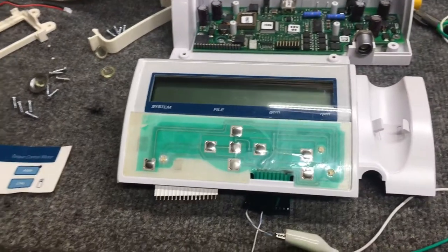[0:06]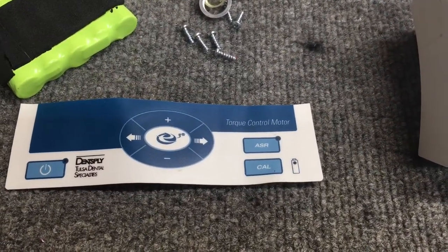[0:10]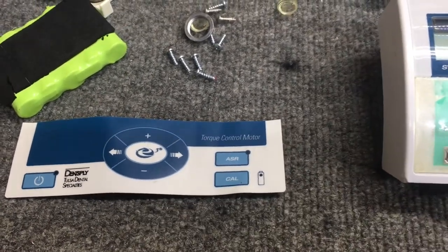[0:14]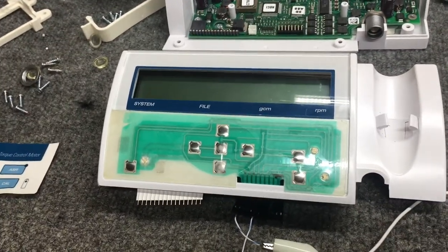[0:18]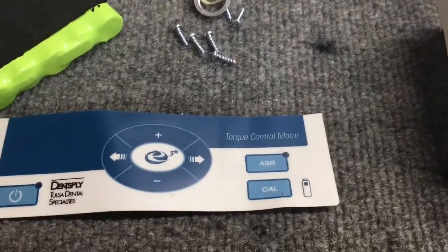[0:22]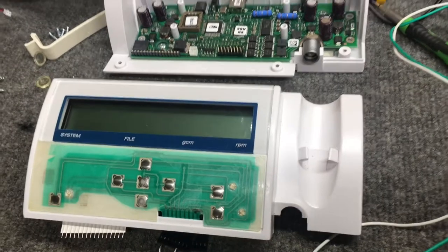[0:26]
Have an interesting one here today. This is Dentsply, could be pronouncing that wrong, by Tulsa Dental Specialties, E3 torque control motor. So I guess this is the motor controller for whatever dental tool this is used for. I'm not a dentist, so I don't know.
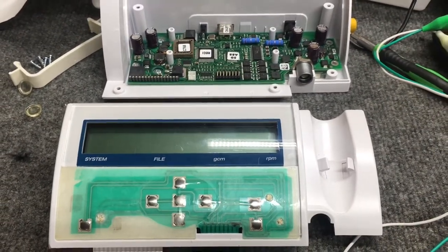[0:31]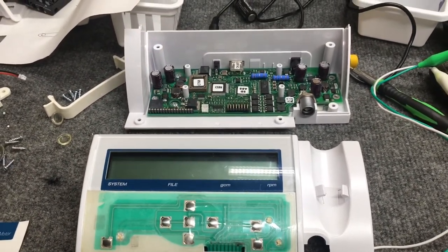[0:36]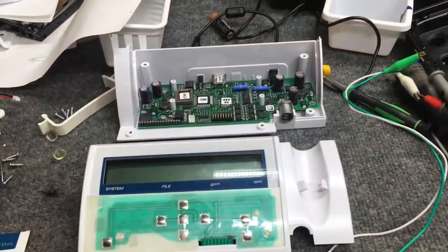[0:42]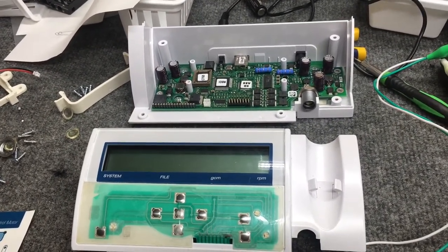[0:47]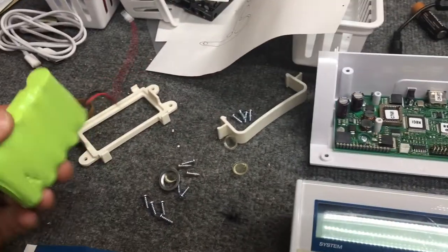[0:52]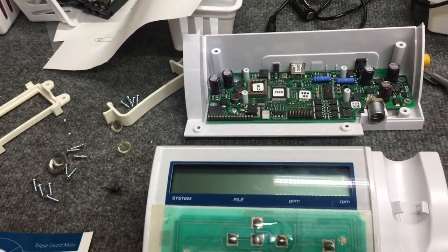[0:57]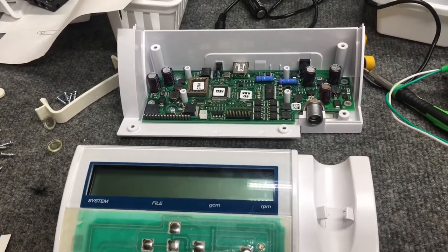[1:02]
It did come in the shop today for a battery issue, I guess. It has an internal battery. The customer requested we replace the battery because they said it's not holding a charge anymore. We plugged this in before we disassembled it, noticed it was charging, so we took it apart and checked the battery itself. The battery seems fine. It's a 6 volt, 2000 milliamp hour battery. From the research I performed, it looks like it's the correct battery for the unit.
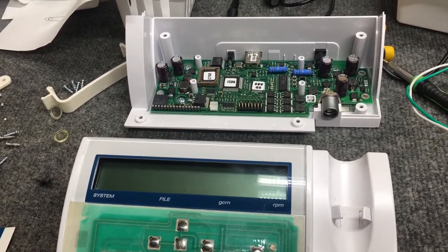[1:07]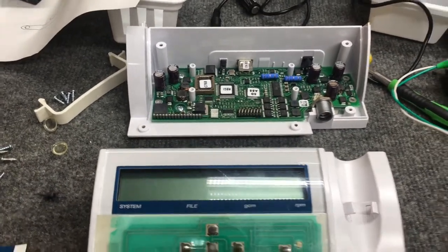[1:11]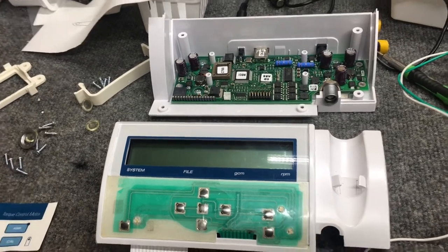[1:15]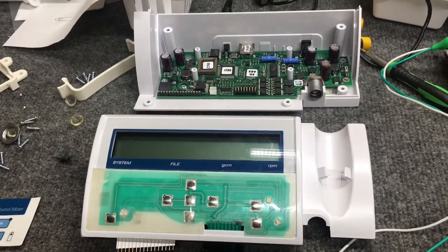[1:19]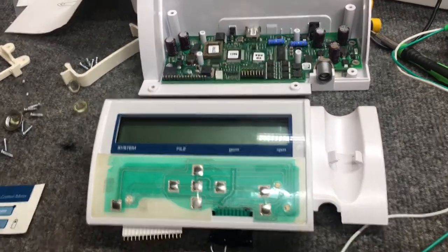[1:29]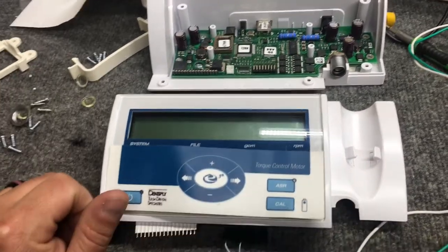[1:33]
So we plugged it back in. It automatically powers on as soon as you plug it in. We unplugged it and the unit stayed on. So obviously the battery was working properly. So we unplugged the battery to kill the unit again, then plugged the battery back in, and the unit does not power on by itself. We tried pressing the power button, nothing.
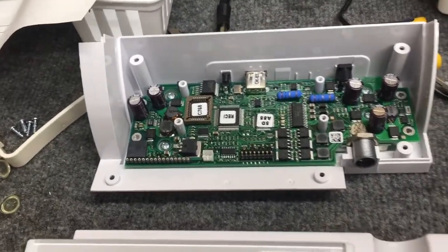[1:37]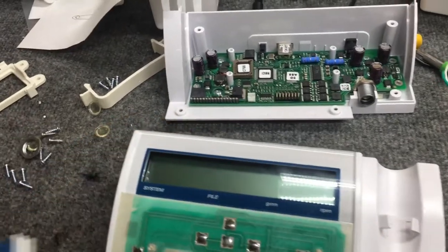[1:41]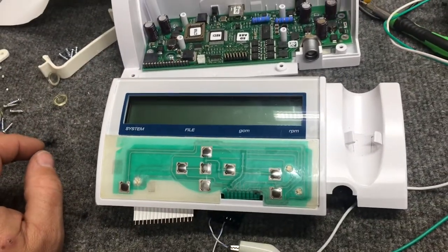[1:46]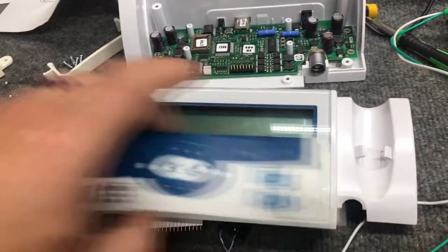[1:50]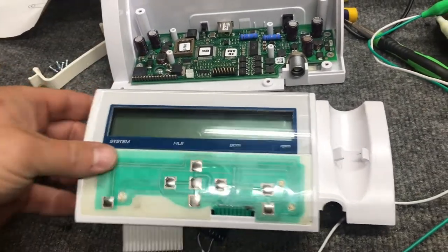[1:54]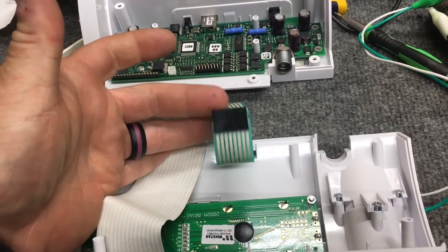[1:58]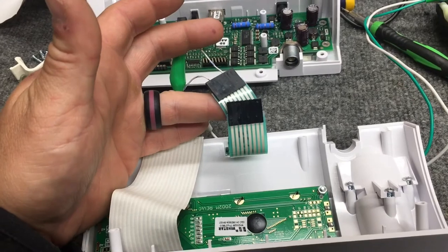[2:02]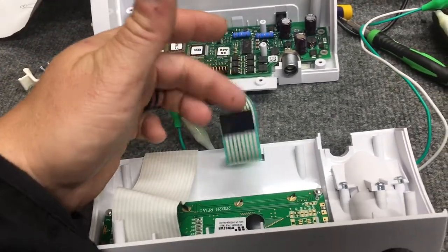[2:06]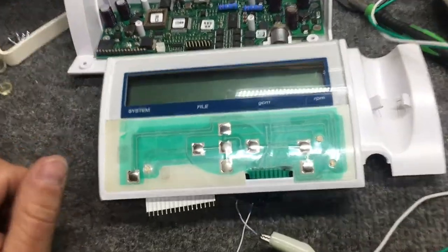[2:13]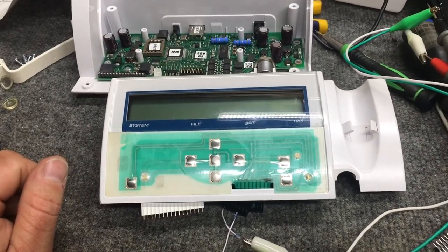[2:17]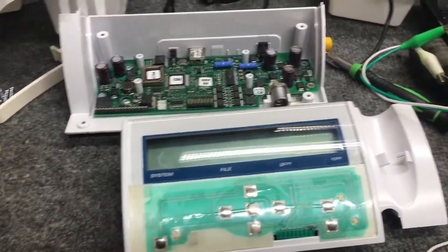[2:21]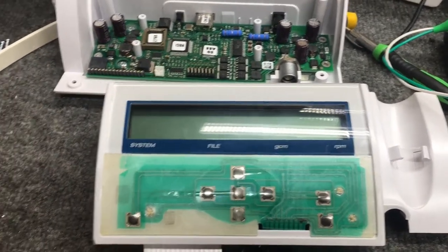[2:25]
So we did a little troubleshooting. We're getting all of the correct voltages on the board itself. So the next thing, we decided to troubleshoot the keypad section. Before we took this decal off, we were trying to figure out which switches controlled which pins on the board. These cables physically connect to either the switches or the LEDs, the indicators. It was getting tricky to figure out. We mapped out a few buttons and figured, let's just pop the decal off. We could always glue it back on after.
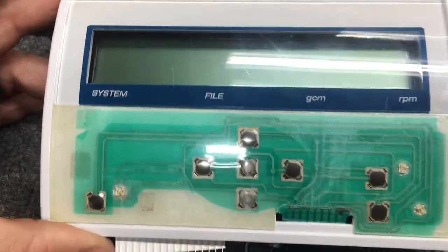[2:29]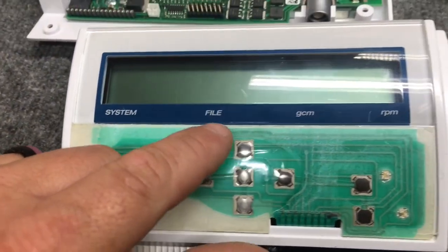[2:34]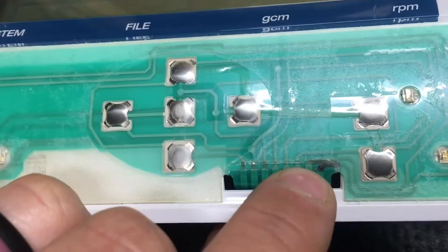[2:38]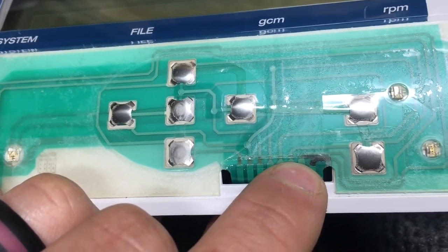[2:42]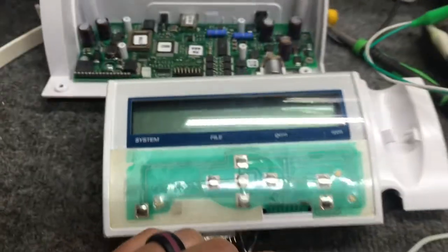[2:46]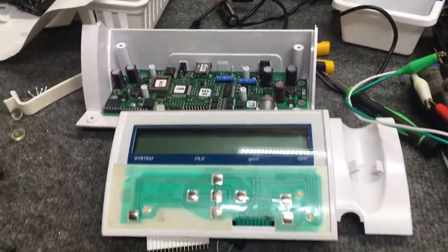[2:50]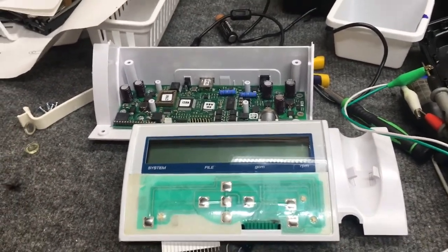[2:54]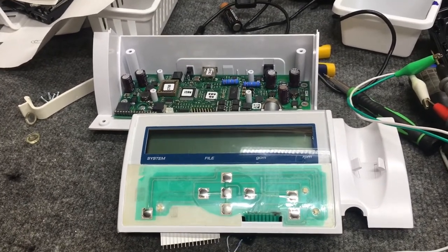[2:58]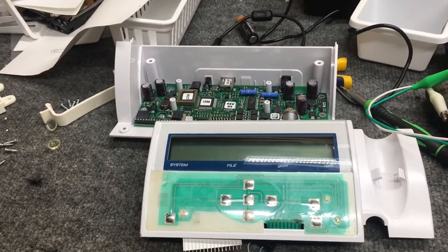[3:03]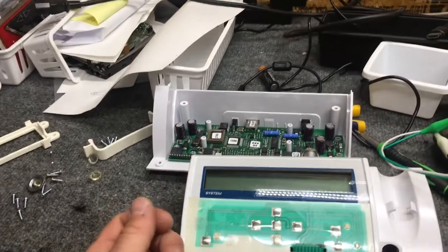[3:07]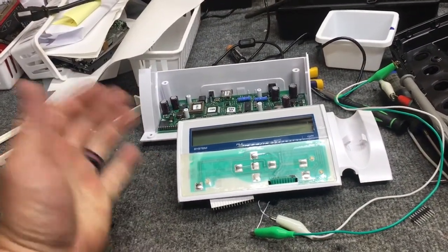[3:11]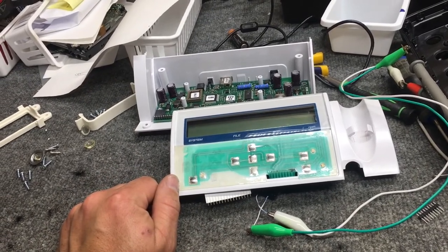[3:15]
What I figured was the case is the power button itself is right here. If we follow back the trace of the power button, right there is our issue. It looks like it's burnt or corroded right on that power trace. So what the customer thought was a battery issue was in fact a power button issue. He assumed it was the battery because when you plug the unit into the wall adapter, it automatically powers on. It doesn't do that when you just have the battery connected. That auto turn on only happens when you plug in the unit. So it makes sense, but in fact it's the power switch.
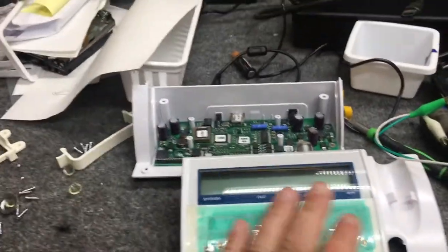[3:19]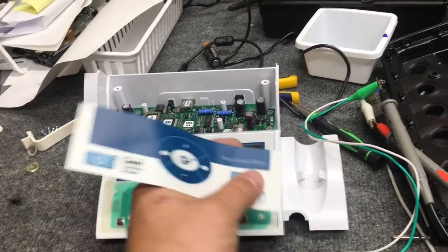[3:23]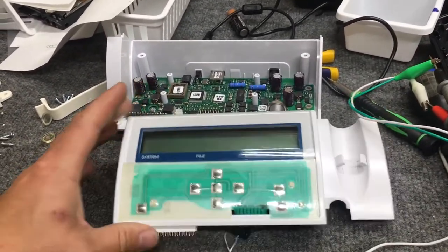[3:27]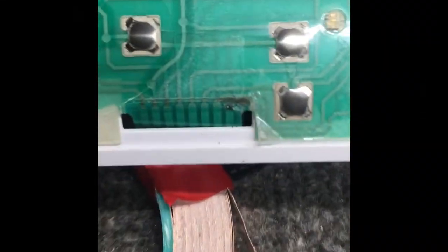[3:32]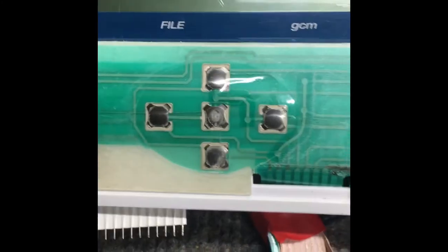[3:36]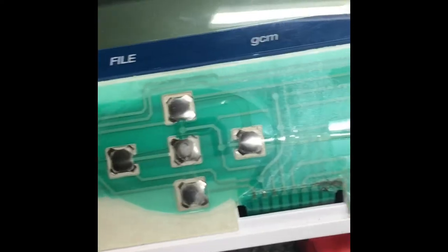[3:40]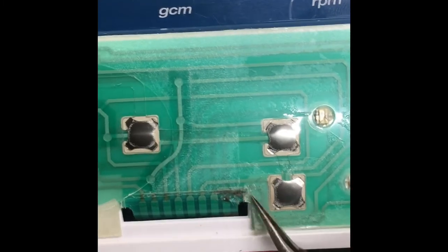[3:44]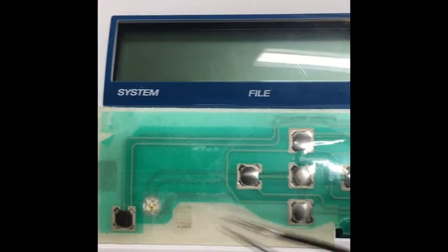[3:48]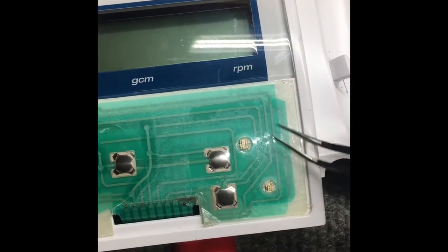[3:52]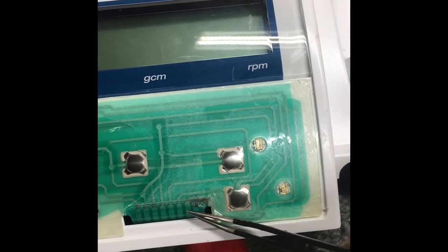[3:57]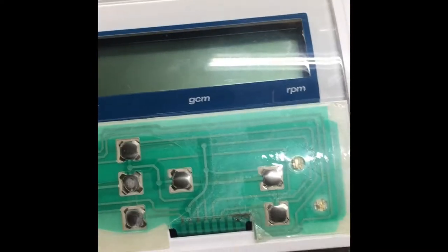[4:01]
We're going to repair this trace for the customer, clean this up a little bit, and glue this decal back on just like the way it came. And we're going to give it a good test. Because of the damage on this membrane, the power switch, we visually traced out where it's connecting. This is the power switch. The two lines up here come down, go around the LED, come over here, and connect to these first two contacts, first two pins.
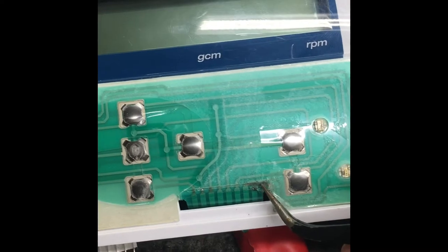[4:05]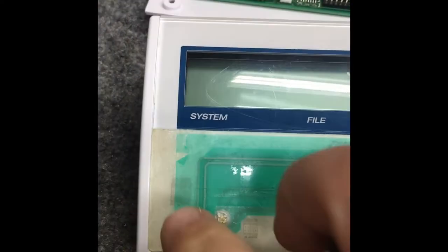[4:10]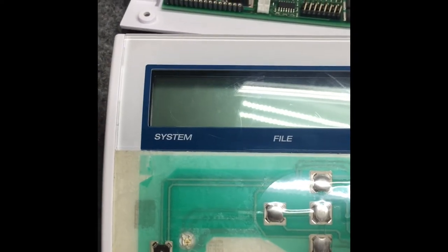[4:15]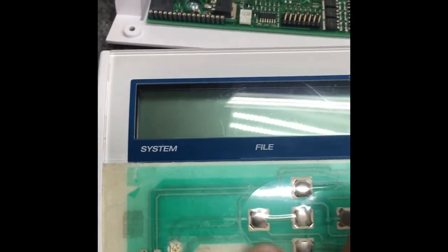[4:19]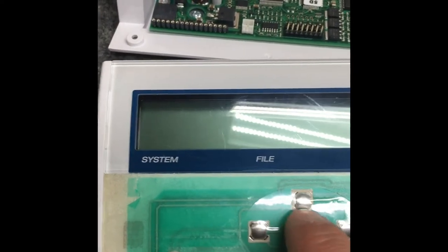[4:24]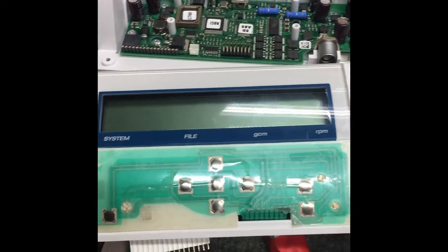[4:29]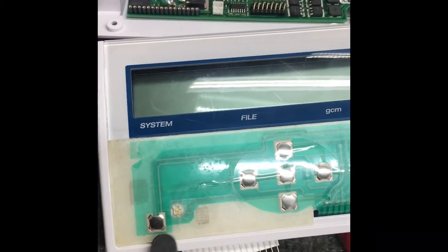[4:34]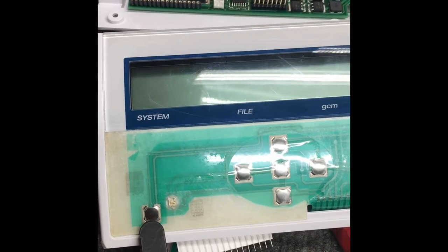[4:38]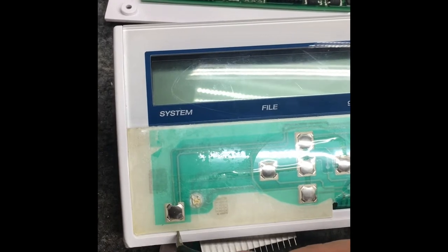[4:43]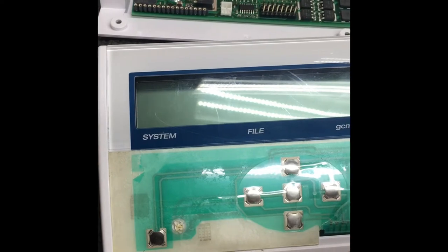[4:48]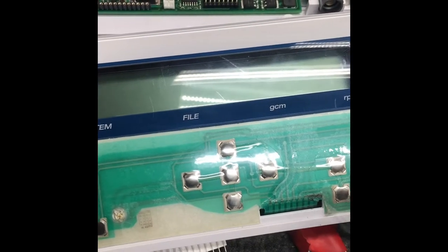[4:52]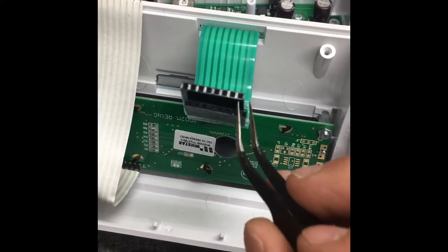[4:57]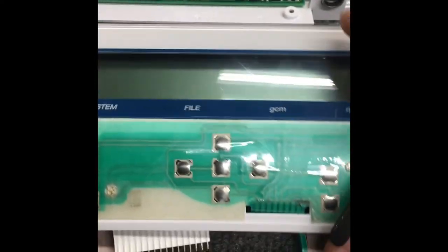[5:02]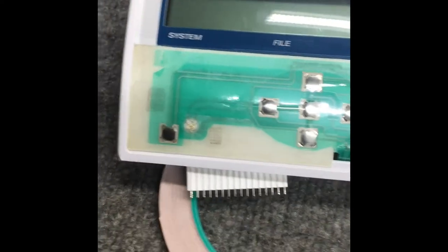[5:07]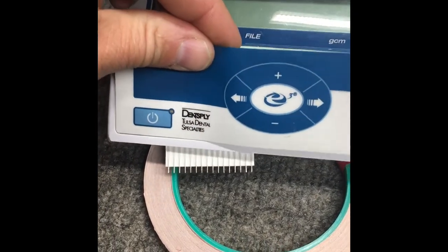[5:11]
Because of the damage, we're going to remove this little switch assembly itself and replace it with an actual microtactile switch. It might be a slightly different height than these, but it shouldn't matter at all. I'm sure the customer just wants this thing back in his inventory. I guess this was a spare for his dental practice. We're going to take some very thin gauge wire, run it down through this little crevice, along here, and connect it directly to these two pins right here. If all works out well, this original decal will cover up those thin wires and we'll be ready to go.
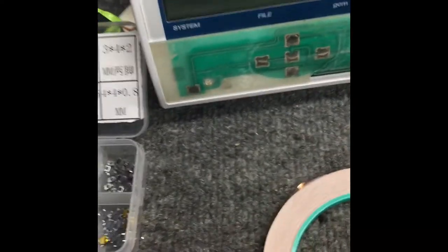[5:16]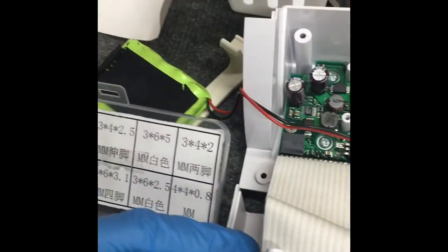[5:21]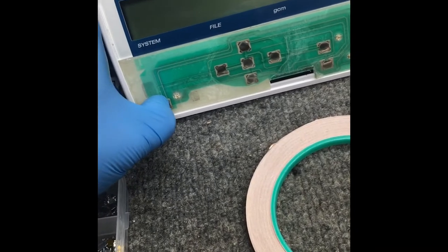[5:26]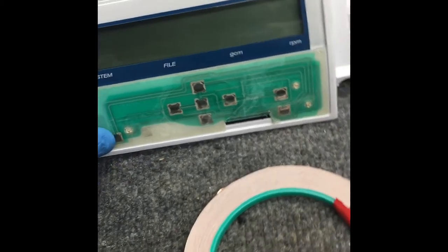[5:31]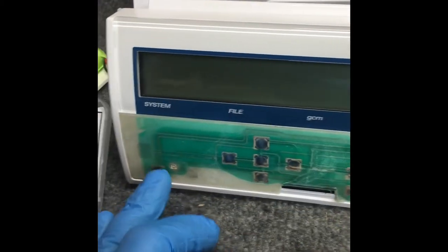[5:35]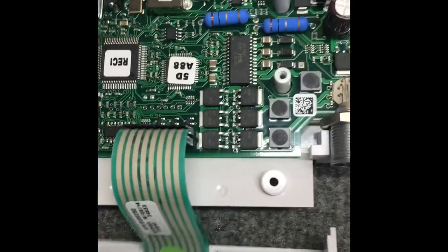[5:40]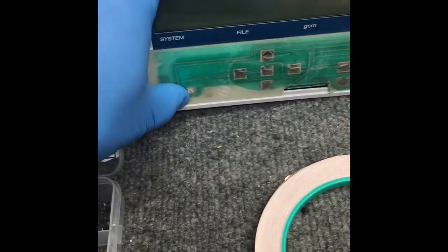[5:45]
I just wanted to show real quick that the power button is indeed not working, so I reconnected the cables and the battery, and we're going to give this power button a test. Pushing, nothing's happening. Pushing, holding, nothing's happening. We confirmed that because we checked continuity, and there's absolutely no connection from the switch once it's depressed to the first two contacts, which are the power button. So just an initial test, definitely not working.
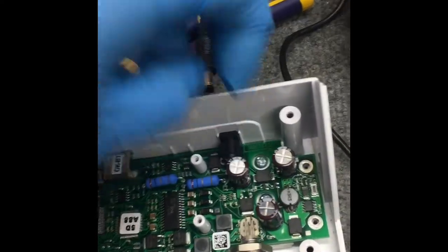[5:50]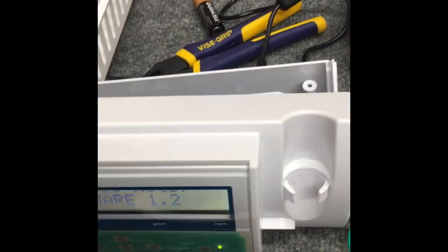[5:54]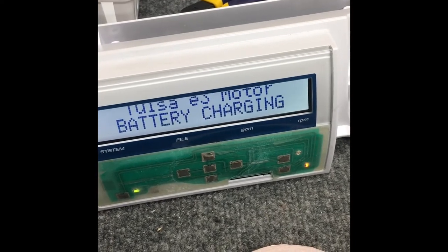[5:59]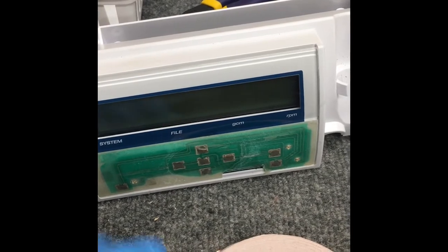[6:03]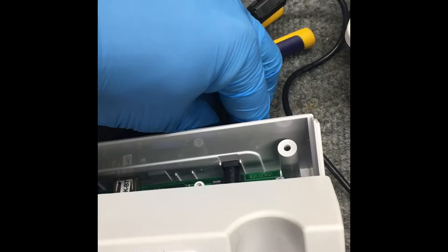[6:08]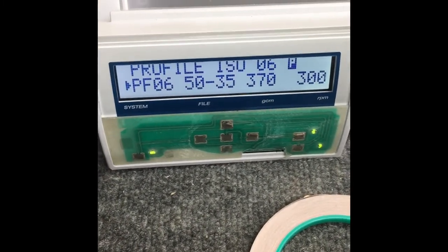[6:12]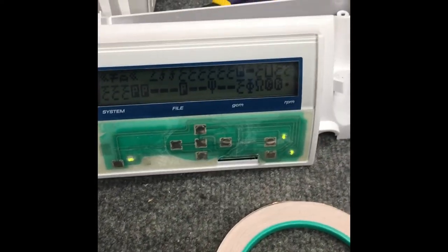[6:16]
But as I mentioned, if we plug in the 12-volt power adapter, it starts up by itself, because it's detecting the charger being plugged in. So we disconnect it and it's still on. So there you go, the battery is in fact functioning properly. But of course, the power switch can't turn it off or on.
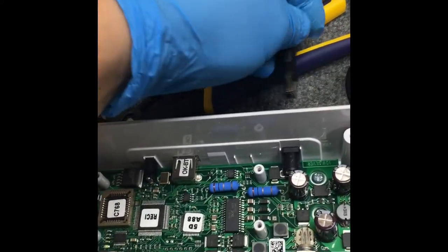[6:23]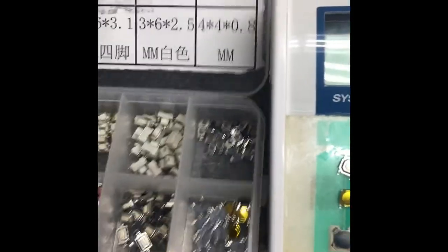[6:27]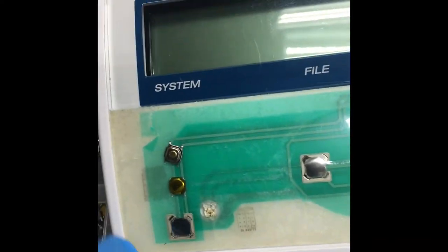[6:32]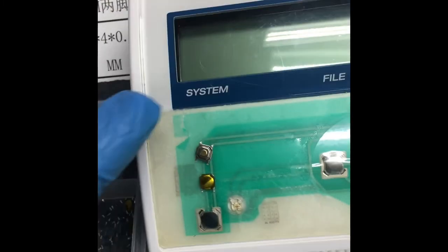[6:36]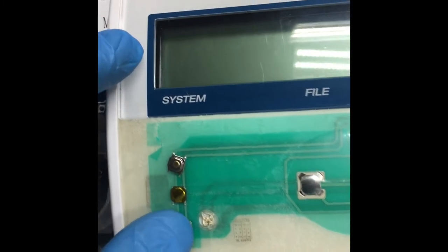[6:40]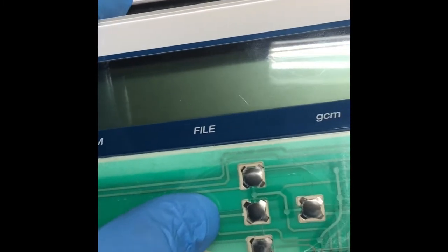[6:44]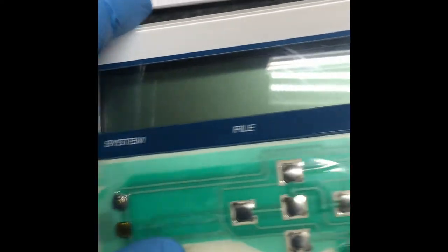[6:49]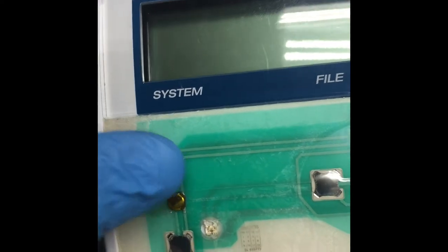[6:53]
We have several styles of micro tact switches here, and we're just lining them up. This is still kind of sticky, so the benefit is we just stuck some of these switches up. I'm trying to get the most comparable tactile feel of these switches. It's obviously not going to be the same, but something similar, something easy to push. So these are the two that we just stuck here temporarily, just to feel.
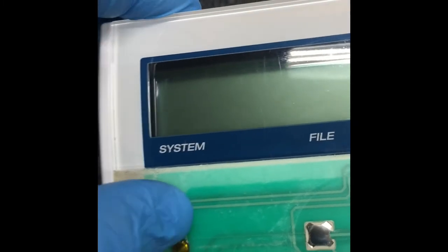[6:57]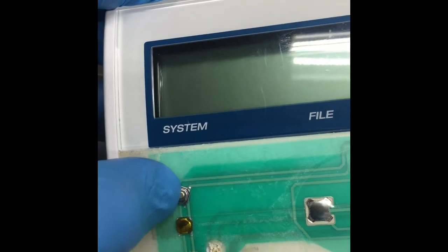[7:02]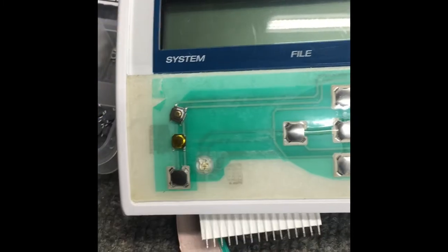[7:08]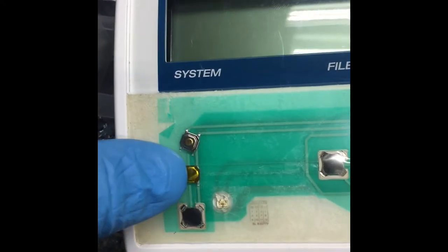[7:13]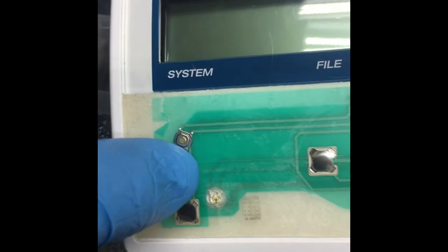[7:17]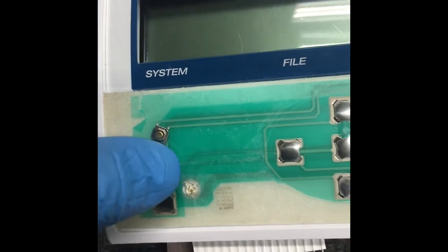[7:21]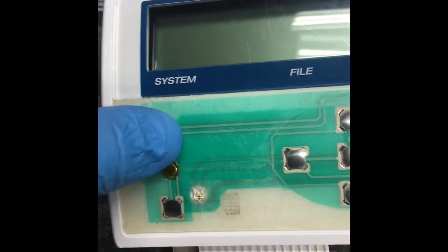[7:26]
Now this switch is very difficult to depress because it's probably meant for another plastic piece or something to go on top of it to push it. Using just a finger, and obviously with the decal on it, this isn't going to work, so we can't use this one. I have this one here. Now this feels much better. It's not exactly like the stock OEM, but it's definitely better than this one here.
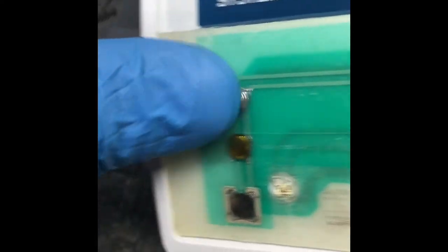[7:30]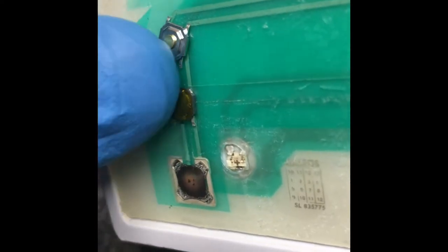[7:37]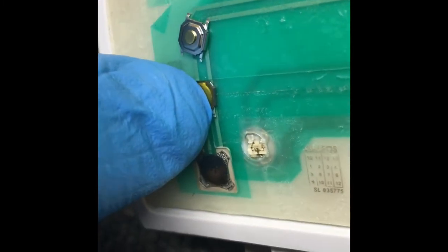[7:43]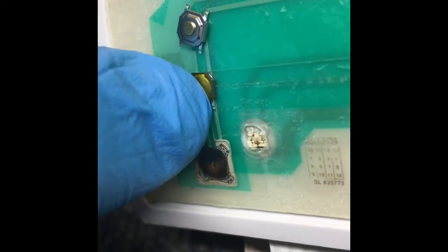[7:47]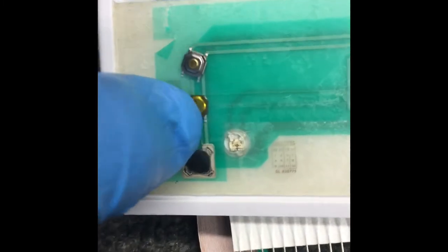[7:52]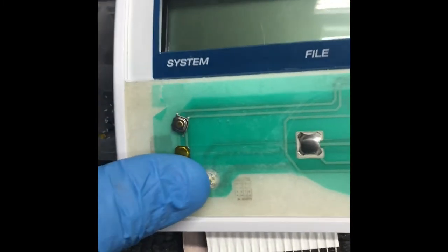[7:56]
And the benefit of this, as opposed to even this one and others in this kit here, is the height. Obviously, it's going to be higher than the stock switch, but really not that much higher. So it's going to bulge out a tad bit, but honestly, when the decal's on it, we're probably not going to notice. So I think when the decal's on that, it's going to work just fine. So that's what we're going to do.
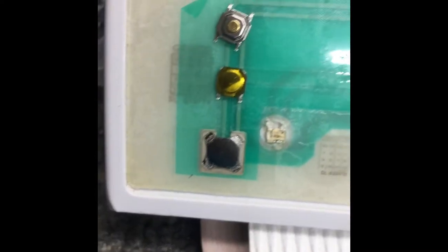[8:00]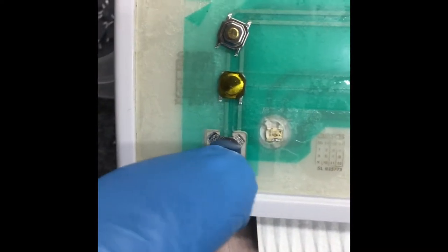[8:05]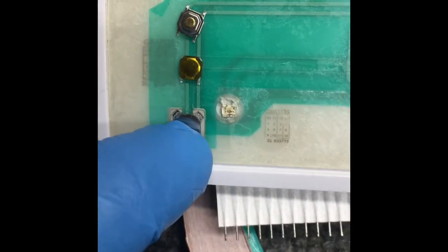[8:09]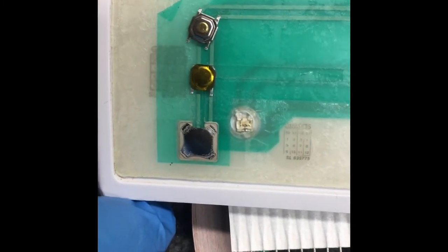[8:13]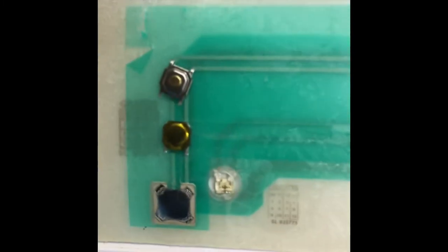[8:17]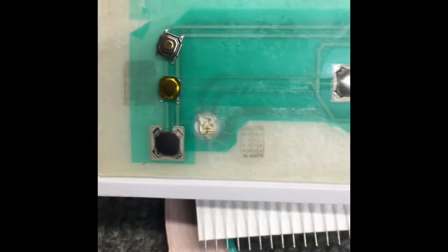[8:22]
We're going to disassemble this contact assembly here, just get rid of this part. We're going to place this switch over here, probably put a couple dabs of glue to hold it in place, and obviously the decal is going to hold it in place as well. Then we're going to run those wires like we mentioned, and we'll pick it up from there. Just wanted to show her off before I route these wires.
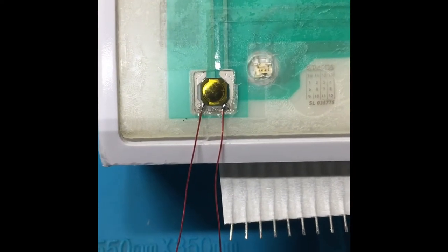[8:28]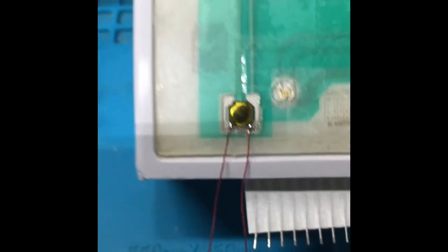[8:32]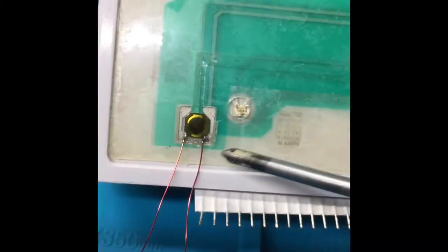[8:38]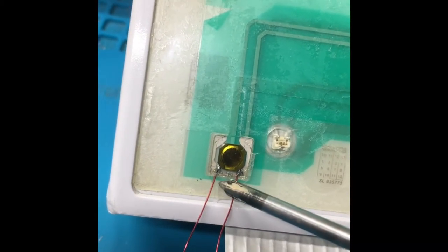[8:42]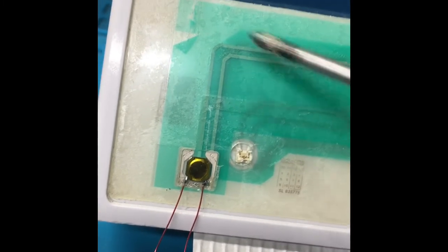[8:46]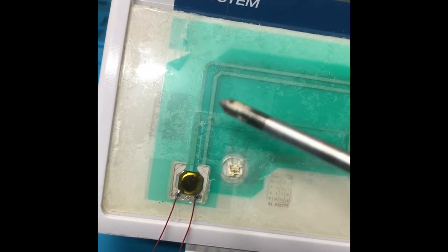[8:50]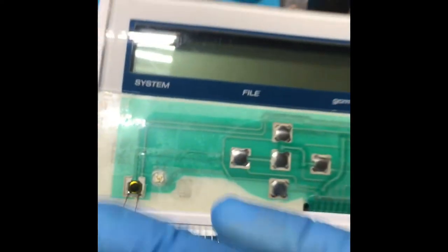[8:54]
So we have the switch glued in place. We have two wires connecting to the switch. Now, let me see. We're actually going to cut out with the X-Acto knife. You can't tell, but there are two channels cut into each side of this because there's a spacer. That's the way these membrane switches work. They have spacers and different lower membrane, upper membrane. And it's almost like a stack.
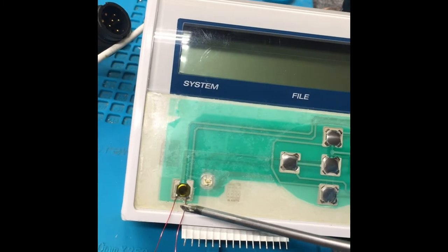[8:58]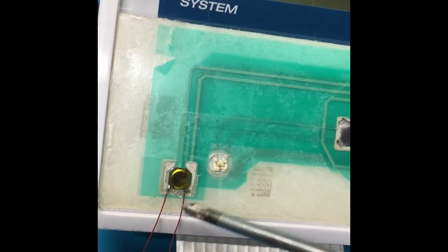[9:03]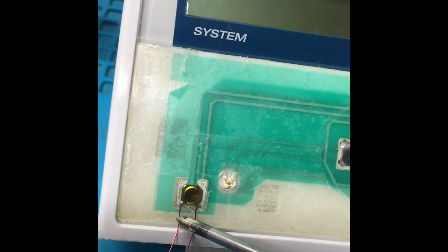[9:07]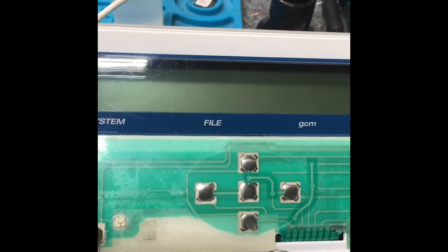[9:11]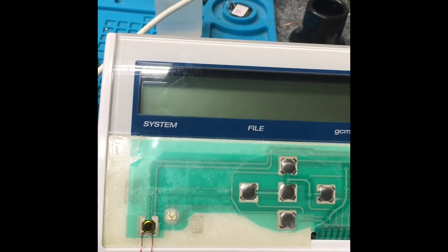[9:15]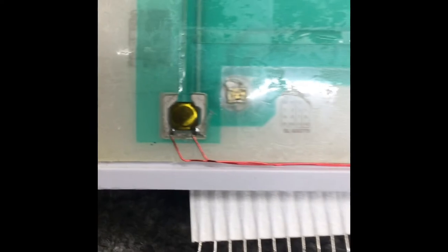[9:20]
They're stacked up. Anyway, I cut through the middle part of the stack, which was a spacer, to make a groove for the wires to fit. I'm going to fit the wires through those grooves. I'm going to route them through here, like I mentioned, and then through here. Hopefully we can hide these bright red wires. All right, this is where we're at now.
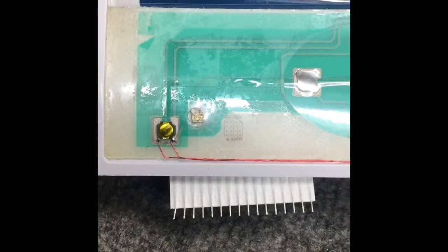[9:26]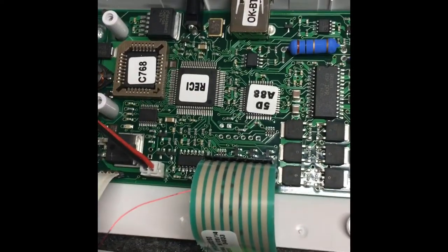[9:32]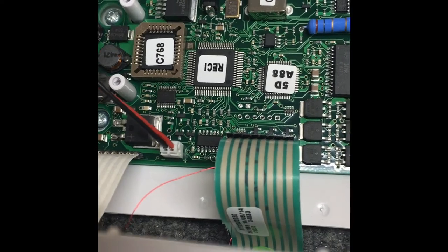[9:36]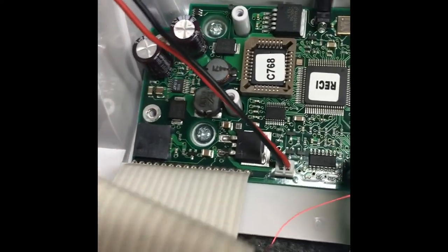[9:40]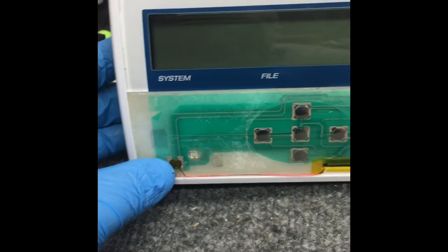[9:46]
We're going to temporarily connect these up and give it a test to make sure it powers on the way it's supposed to. Okay, here we are. We temporarily connected everything up. I'm going to clean these wires up and run them along those ribbon cables, nice, with probably some Kapton tape. We have the battery connected. And this is the first time I'm testing right now. Let's see. Hopefully all goes well.
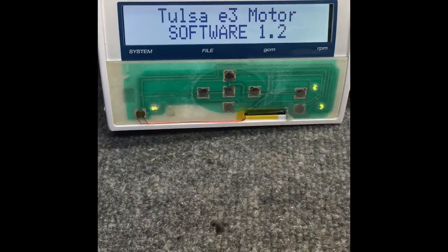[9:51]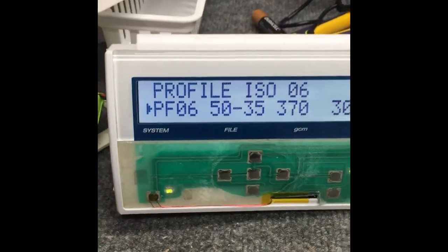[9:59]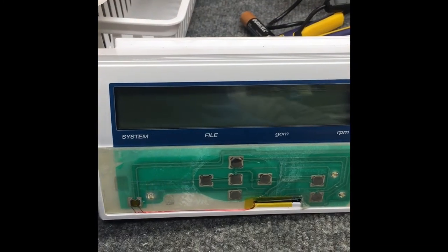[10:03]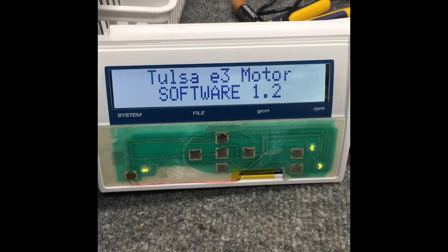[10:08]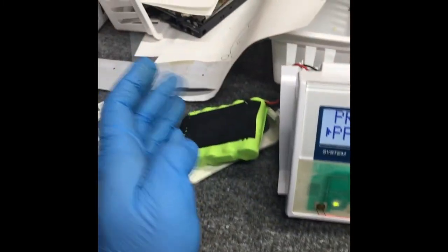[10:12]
Look at that. Power button works. We're just on battery right now. No adapter connected. Awesome. Power off. Power on. All right, so there we go. Battery's fine. It was not a battery issue. It was a switch issue.
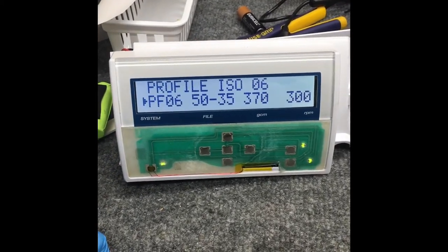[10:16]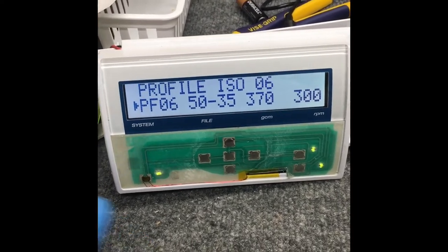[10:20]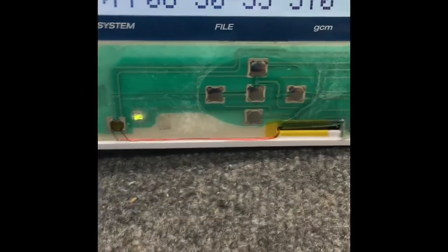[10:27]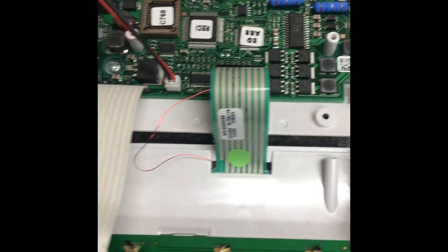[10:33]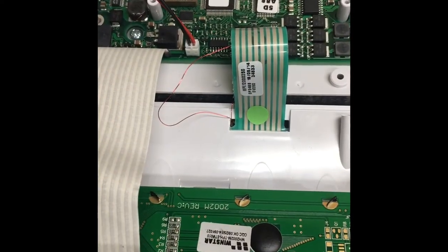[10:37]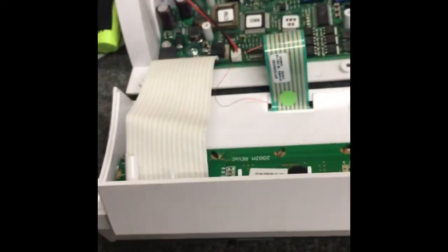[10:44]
And normally, you can't get a replacement switch. You can't get really any parts for these units here. So really the only option is what we did: actually put a tactile switch there, and all right, back up and running. Awesome. I'm going to clean up the wiring a little bit, and we'll get right back to you when this thing is done with the overlay, the vinyl, back on it, and we'll take one last look at this.
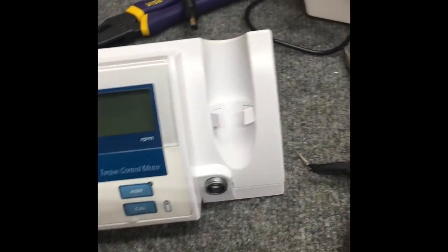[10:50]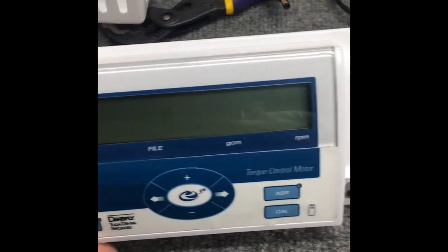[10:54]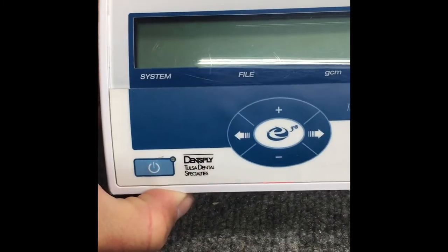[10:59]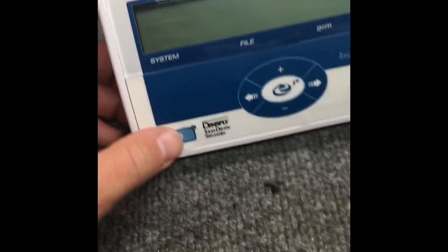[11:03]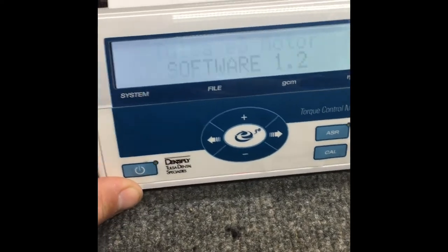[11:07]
Okay, here we go. We're all put back together. Everything's connected. The battery's connected. We didn't put the case screws in just in case we have to pull it apart for whatever reason, in case this test doesn't go well. All right. Well, there it is, fixed.
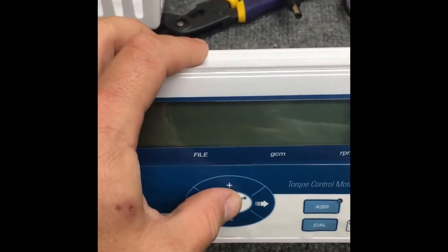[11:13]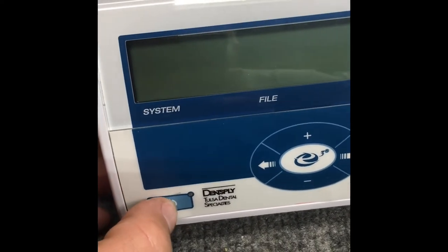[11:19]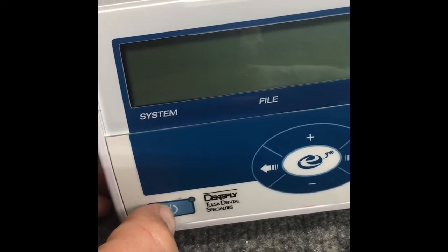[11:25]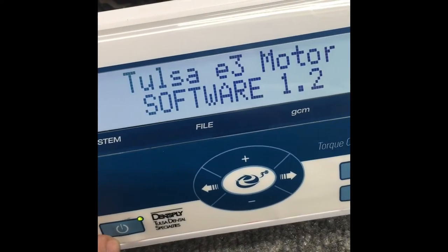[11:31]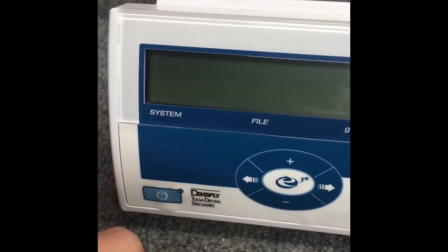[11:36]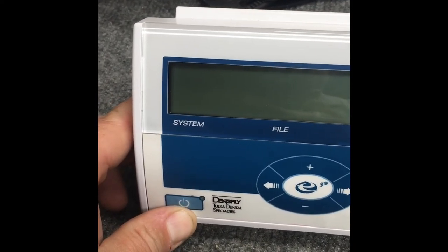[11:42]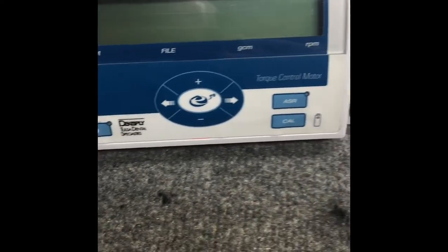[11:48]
Hope the customer's happy. The feel isn't perfect. You get an audible click with the stock, obviously. It's less of a click than I was hoping. It's definitely working. If you use your nail sort of in the center, you can't hear it, but you do feel the click. I did feel the click much more before I put this vinyl on, but because the vinyl's tight, it's cutting down that click feel. But in any case, it is working. I hope the customer's happy. Really, this is the only way it can be repaired without having OEM parts, which are not available.